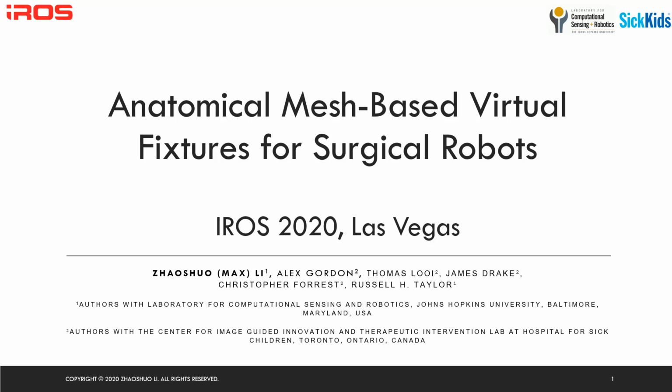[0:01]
Hello everyone, my name is Max and I'm glad to present our work, Anatomical Mesh-based Virtual Fixtures for Surgical Robots. This is a joint work between Johns Hopkins University and SickKids Toronto.
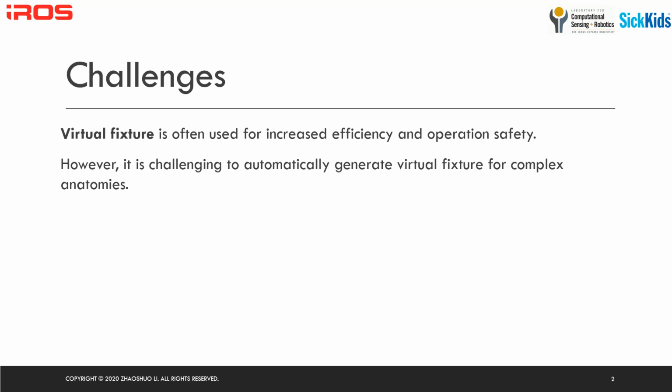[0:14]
A virtual fixture is a virtually implemented fixture to constrain or guide motion in software. This can further increase the efficiency and safety by providing the user appropriate assistance. In surgery, virtual fixtures can be used to prevent the surgeon from damaging critical anatomy. However, it is very challenging to automatically generate virtual fixtures for very complex anatomies.
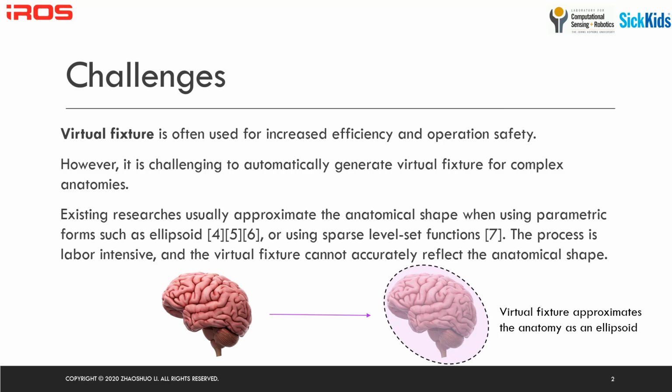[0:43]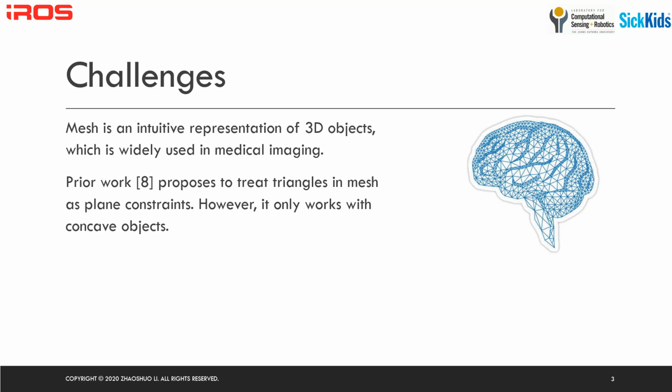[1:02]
Existing research mostly obtains an approximation of the anatomy using a parametric form, for example, using an ellipsoid or sparse level set functions. To generate these virtual fixtures, it is usually labor intensive, and the result is not very accurate. On the other hand, polygon mesh structures, which contain triangles, vertices, and face normals, can accurately represent the anatomical shape. It is widely used in medical imaging to visualize 3D shapes.
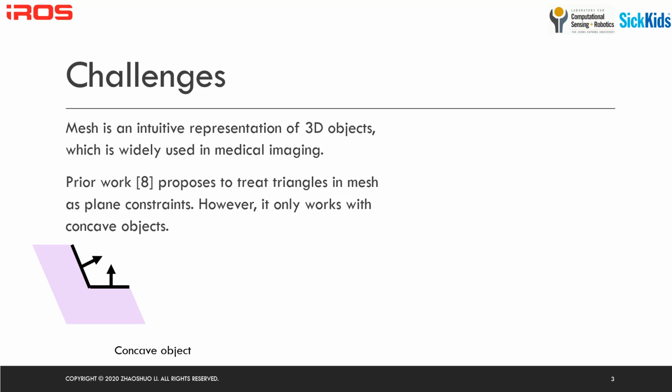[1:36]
Prior work proposed to treat all triangles as plane constraints to force the tool to be on the positive side, such that a protection layer is built around the anatomy. However, this is ill-posed and only works with concave objects. To demonstrate the idea, we use 2D geometries, where black lines indicate the triangles, the black arrows indicate the face normal, and the blue region is the anatomy.
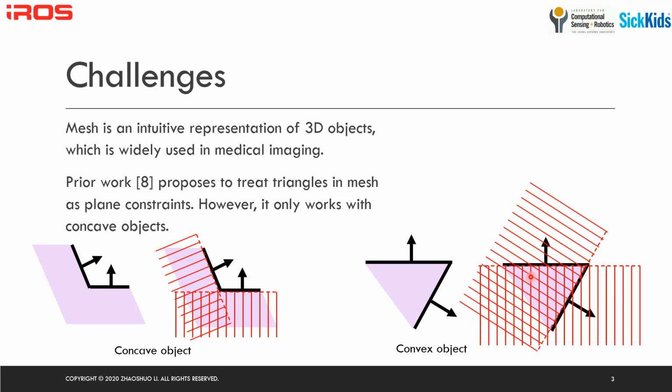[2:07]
For a concave object, if all triangles are used as plane constraints, the red hatched region will be the forbidden region, and the algorithm can produce the desired constraint. However, for a convex object, the red hatched out region will remove many theoretically feasible regions as well, leaving only a small space for the robot to move.
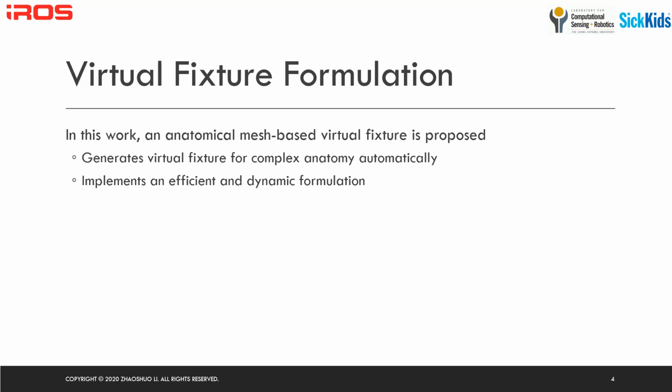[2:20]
This is undesirable. Therefore, in this work, we propose another anatomical mesh-based virtual fixture, and we generate the virtual fixture for a complex anatomy automatically, and we do not make any assumption of the shape of the anatomy. We implement an efficient and dynamic formulation such that the algorithm can run in real time in the kHz range.
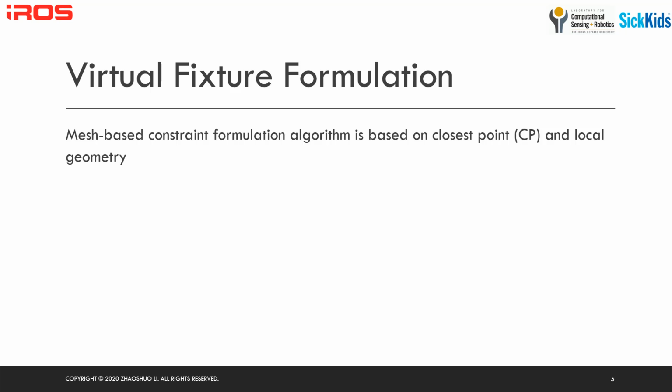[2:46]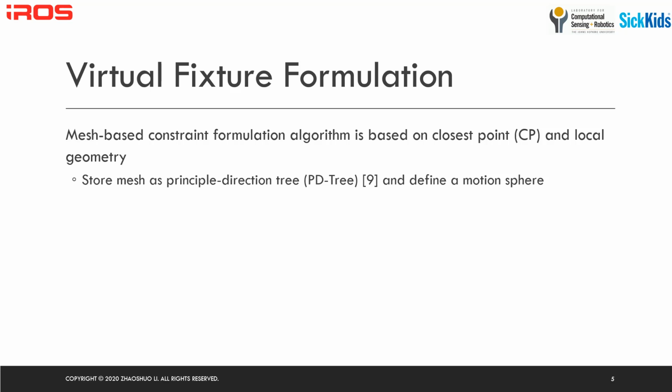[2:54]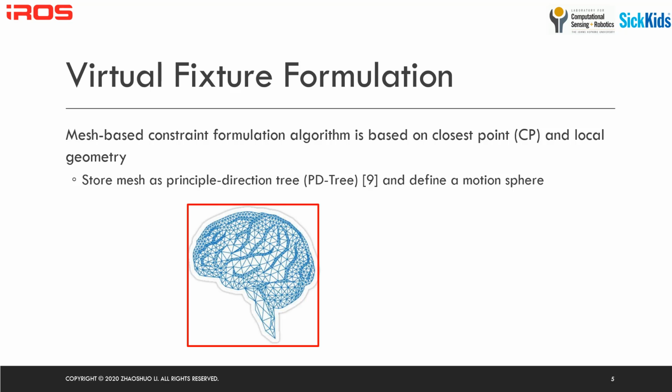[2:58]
The proposed mesh-based constraint formulation is based on the closest point and the local geometry. First, we store the mesh as a PD tree. A PD tree stores the triangles in a node and builds a bounding box around each node. The nodes are split along the most distributive direction, and the process is repeated to further divide the mesh. This allows for very fast geometric search.
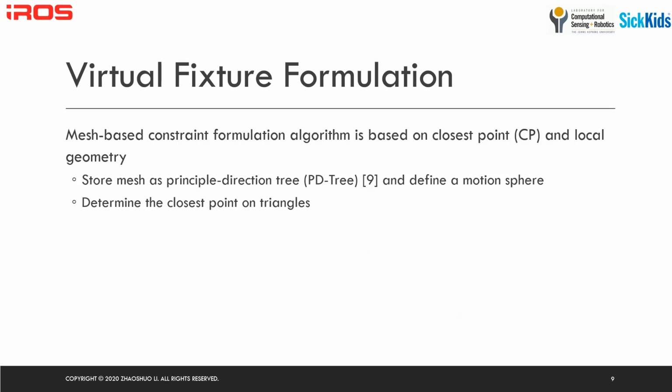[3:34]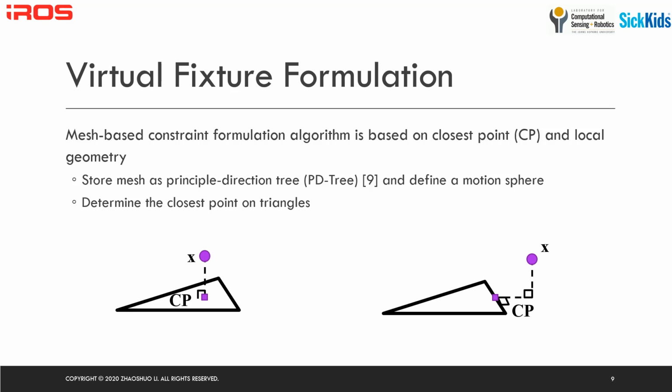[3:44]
We define a motion sphere whose radius is defined by the maximum motion capable of the robot within one control iteration. Therefore, we can reject triangles that are farther away than this radius, since the robot will not reach those triangles within this control iteration. Then, we determine the closest point of a point on a triangle of interest, and there are two possible cases. One is when the projected point is within the triangle, and the closest point is the same location. The other possibility is the projected point is outside of the triangle, and the closest point is on the closest edge.
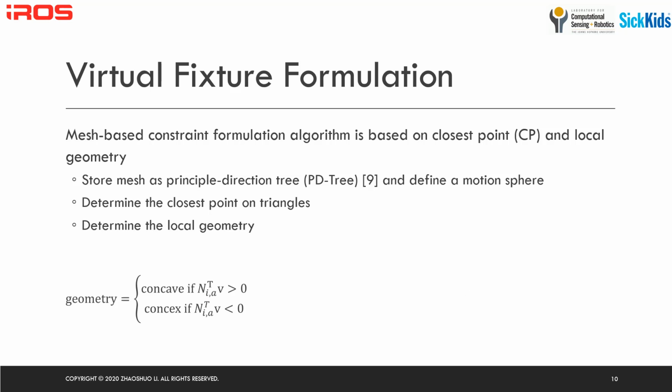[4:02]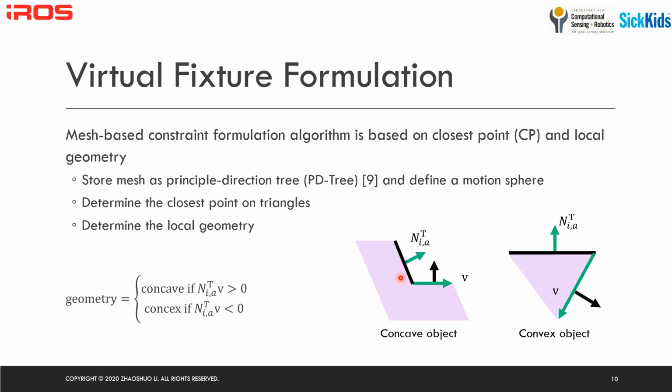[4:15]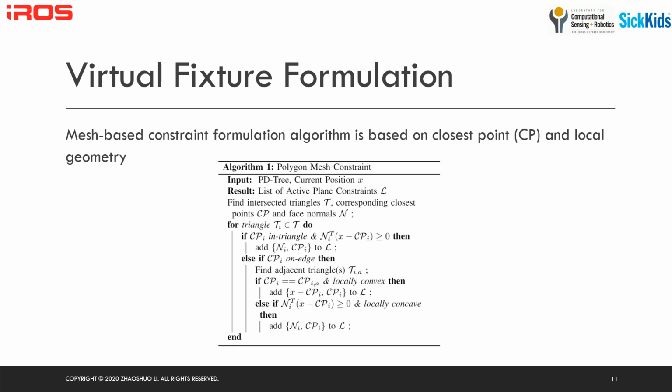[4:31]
Next, we determine the local geometry by a simple dot product as shown in the equation here, where n is the normal and v is the non-shared edge of the adjacent triangle. To illustrate this, these two arrows here are the vectors used in the dot product. As shown, when the dot product is positive, it's a concave object, and when the dot product is negative, it's a convex object. Thus, we have our mesh-based constraint formulation conditioned on both the closest point and also the local geometry.
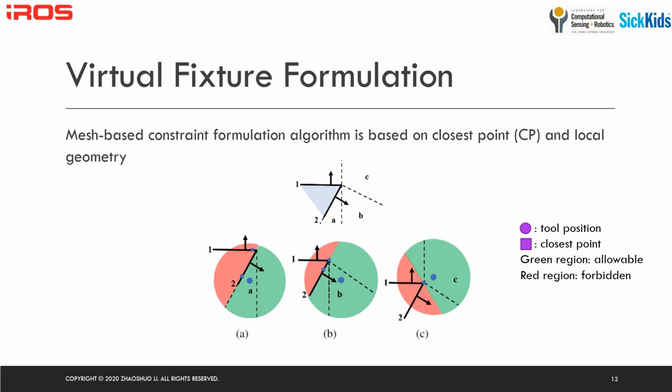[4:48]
To illustrate how this algorithm works, we'll use 2D illustrations and enumerate different cases. In the case of a convex object, the possible regions can be divided into 3 different sections, and the rest will be the same due to symmetry. Given a robot tool position shown as a blue sphere here, if it is in region A and B, only plane 2 will be activated. Once it moves into region C, however, the activated plane will be defined by the vector pointing from the closest point to the tool position, thus approximating the sharp edge of a convex object.
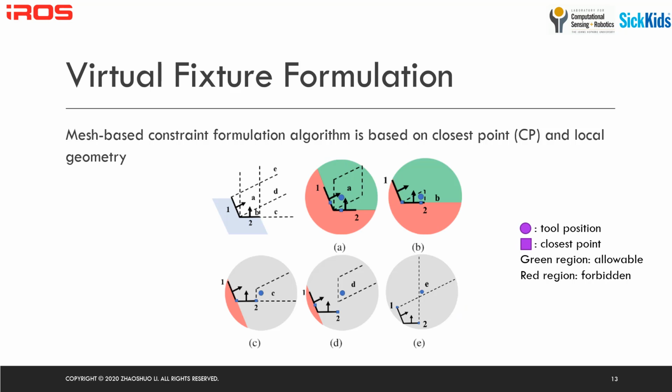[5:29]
In the case of a concave object, there are 5 possible regions, and the rest will be the same due to symmetry. If the tool position is in region A and B, both plane 1 and 2 will be activated. If the tool position is in region C and D, only plane 1 will be activated. For plane 2, we will need additional information of the neighboring triangles. If it is provided, it will be one of the previous cases we have enumerated. Similarly, if the tool position is in region E, we'll need the information of adjacency of both plane 1 and 2 in order to provide the constraint.
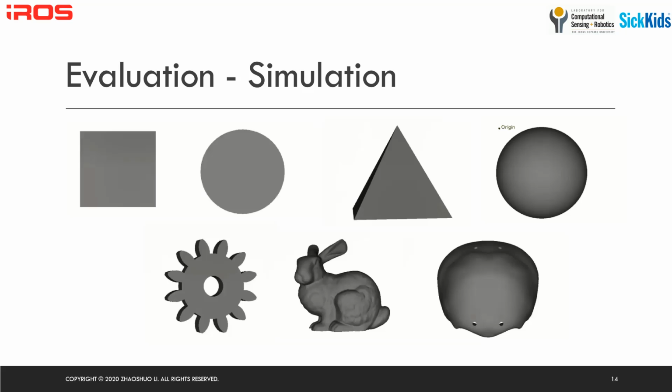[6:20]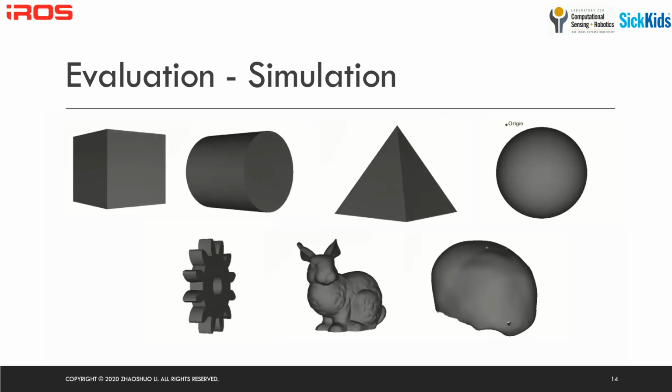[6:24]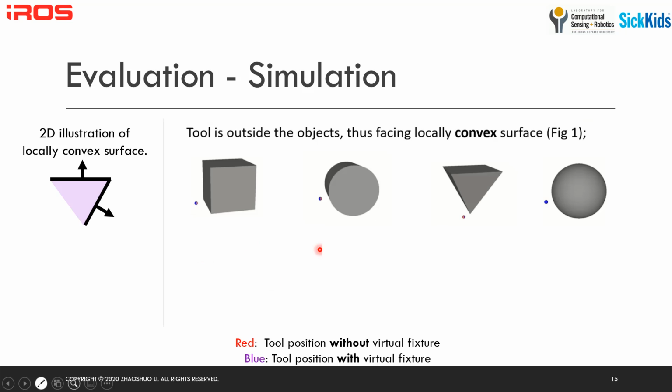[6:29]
We first evaluate our algorithm in simulation, where we have tested different objects as shown here. For these simple geometries, if the tool position is outside of the objects, we have a convex surface as illustrated here.
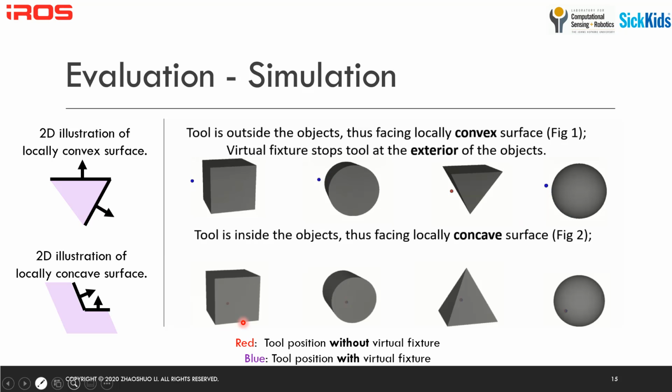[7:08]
Additionally, we show the tool position without virtual fixture, in other words, the commanded position, as a red sphere, and the tool position with virtual fixture, in other words, the virtual fixture constrained motion, as a blue sphere. As shown, the blue sphere can be successfully stopped at the exterior of the object, even if the red sphere enters the object. On the other hand, when the tool is inside the object, it is facing a locally concave surface, as shown here. When the commanded position exits the object, the blue sphere can successfully be stopped at the interior of the object, thus demonstrating the effectiveness of our virtual fixture.
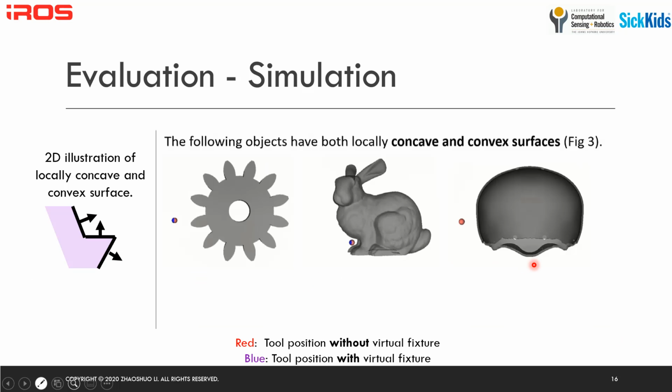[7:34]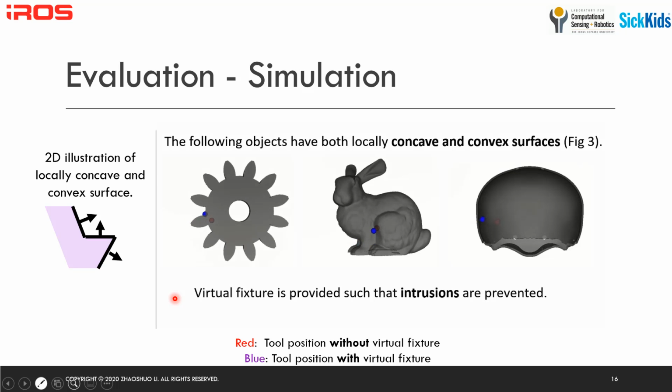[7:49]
For real-world objects, they usually contain both locally concave and convex surfaces, as shown here. However, our algorithm is agnostic to local surface geometry and can successfully stop the tool from entering the objects.
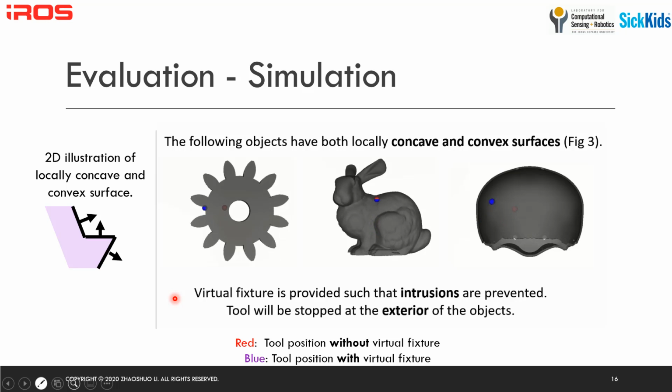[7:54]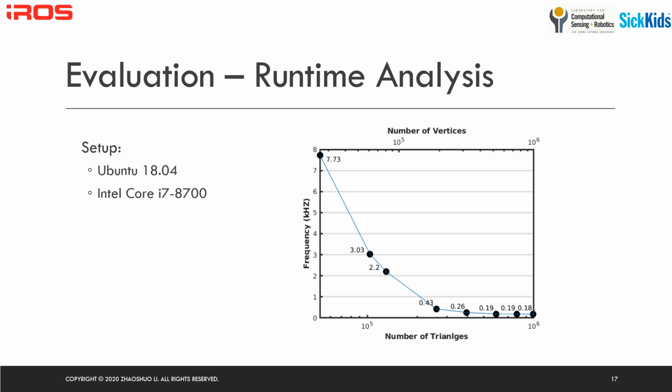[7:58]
We also conducted runtime analysis to evaluate our algorithm. Our setup is shown here. As shown in the diagram, when the number of triangles increases, the speed of our algorithm drops gradually. When the number of triangles is in the order of hundreds of thousands, however, the frequency can reach kilohertz, which is desirable for a lot of robotics applications.
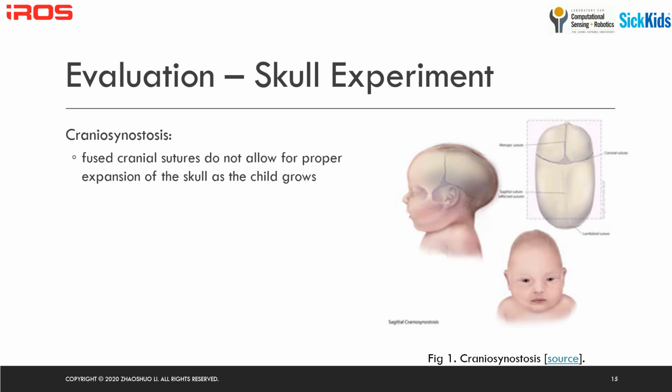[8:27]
We conducted a real experiment applied to craniosynostosis. It occurs when one or more cranial sutures prematurely fuse. The fused cranial sutures do not allow for proper expansion of the skull as the child grows, and these cranial sutures must be reopened by surgical intervention. This operation usually requires delicate tool movement to avoid incision-related complications, such as damaged dura.
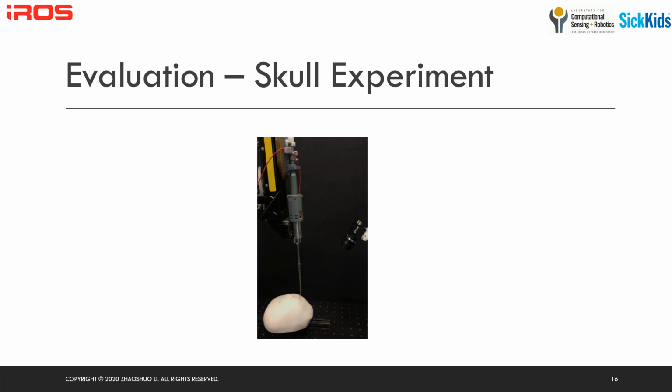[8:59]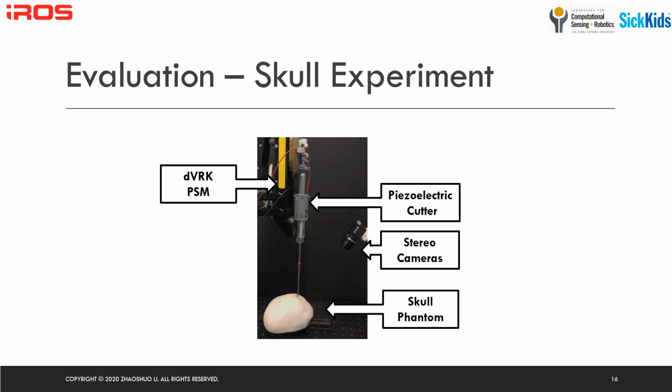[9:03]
The system setup is shown here, where we use the da Vinci Research Kit and a piezoelectric cutter designed specifically for craniofacial surgery. We use a 3D printed skull phantom to represent the pediatric skull. We set up the virtual fixture such that the skull exterior surface is protected, and two virtual walls are used to facilitate the path following.
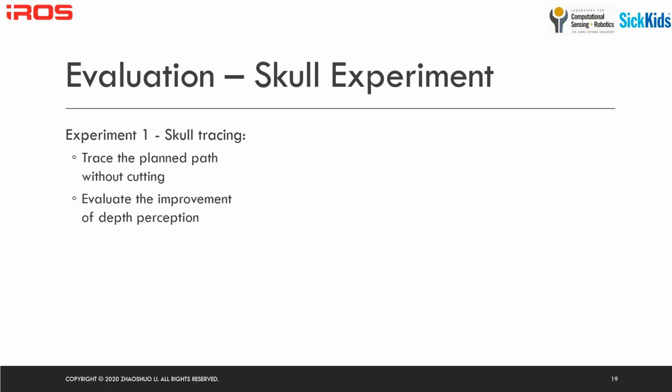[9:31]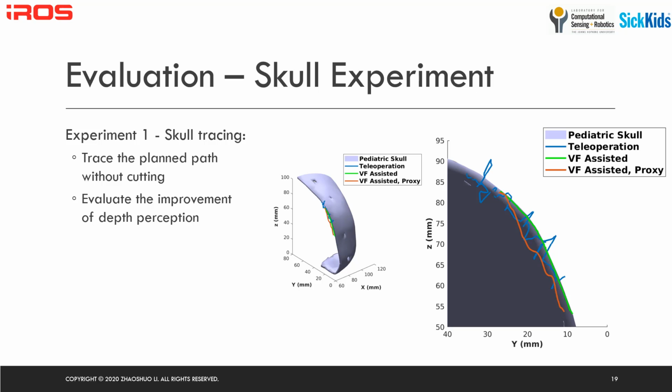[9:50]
The first experiment is skull tracing, where the user is asked to trace the exterior of a skull along an already cut path, which is a straight line. So we want to evaluate the improvement of depth perception due to virtual fixture. Shown on the right is a cross-section of a pediatric skull. When there is no virtual fixture, the path is shown as the blue line here.
We see a lot of adjustment based on stereo vision. On the other hand, when the virtual fixture is provided, shown as the green line here, even if the proxy path, in other words the commanded position shown as red, already penetrates the skull, the virtual fixture can stop the tool from entering the dura. Therefore, the green line follows the exterior of the skull best.
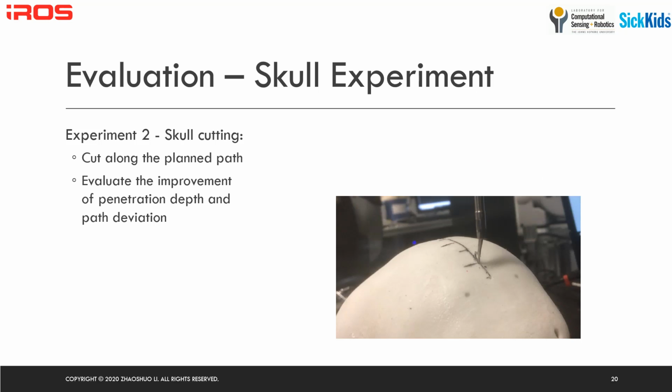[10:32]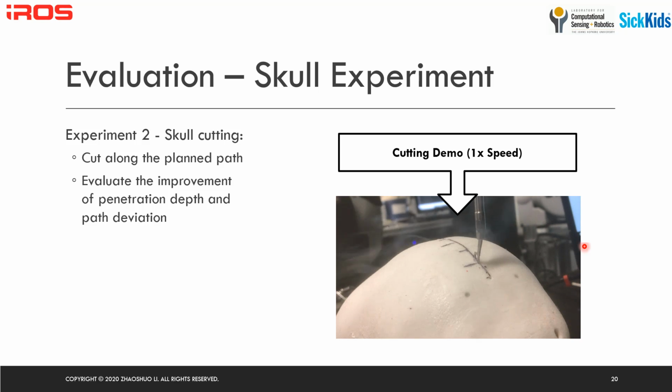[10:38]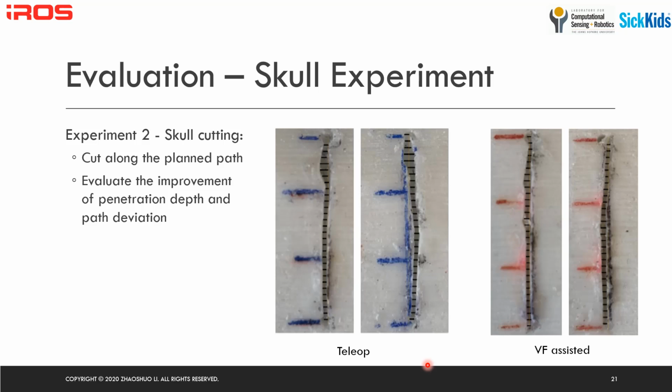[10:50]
The second experiment is skull cutting, where the user is asked to cut along the planned path. Here's a short demo of the actual cutting. We want to evaluate the improvement of the reduced penetration depth and also path deviation. Shown on the right are the cutting paths of the skulls cut by teleoperation and virtual fixture assisted teleoperation. The cut path is a straight line of 30 mm. We measure the deviation of the cut path every 1 mm interval, as shown by the black short lines.
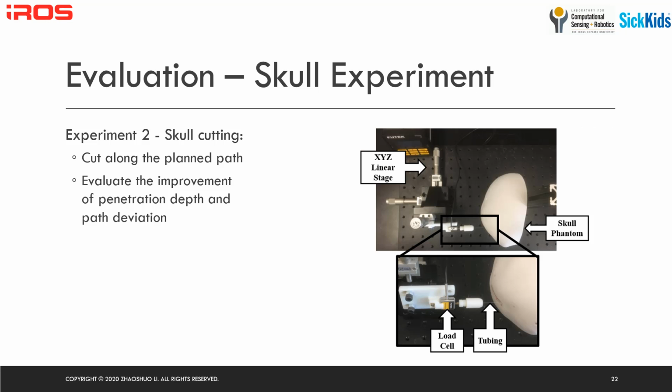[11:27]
Qualitatively, we see that the teleoperation has a much larger deviation from the planned path compared to virtual fixture assisted teleoperation. Before cutting, the interior of the skull is overlaid by a layer of wax. The penetration depth is measured as the offset between the exterior of the skull and the wax. We use an XYZ linear stage with a load cell mounted on it. A small tubing is installed on the load cell to detect contact. Therefore, we are able to measure distance.
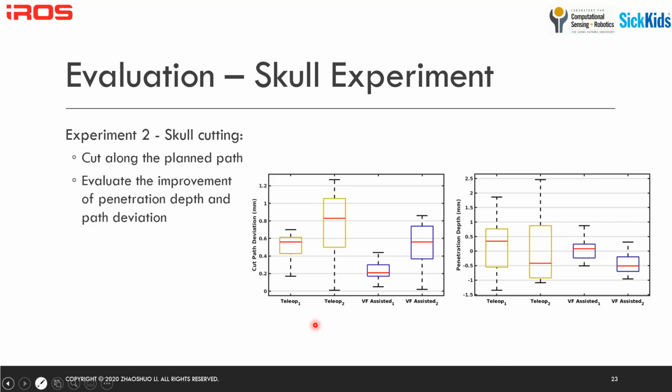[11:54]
Of the two skulls cut by teleoperation and the two skulls cut by virtual fixture assisted teleoperation, we see that the cut path deviation has dropped from on average 0.63 mm to 0.37 mm with a much smaller standard deviation. As for the penetration depth, the absolute penetration depth has decreased from 0.83 mm for teleoperation to 0.39 mm for virtual fixture assisted teleoperation, also with a smaller standard deviation. Therefore, we conclude that the virtual fixture assisted teleoperation is more advantageous than teleoperation.
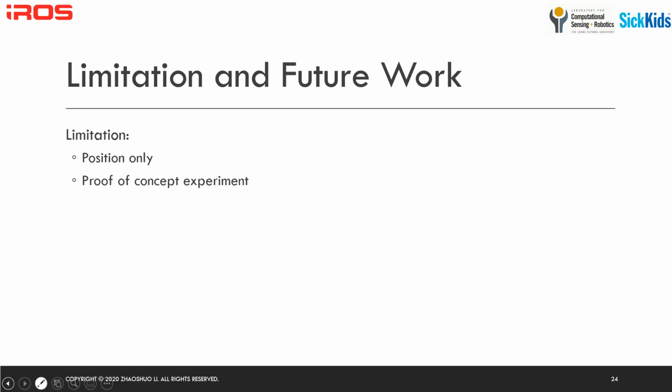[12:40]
The current limitation of our work is that it is position only, which means the rotation of the tool is not constrained, and we only did a proof of concept experiment. In future work, we would like to extend this to a sixth degree of freedom, such that the rotation of the tool is also constrained. We would also like to conduct a larger scale user study.